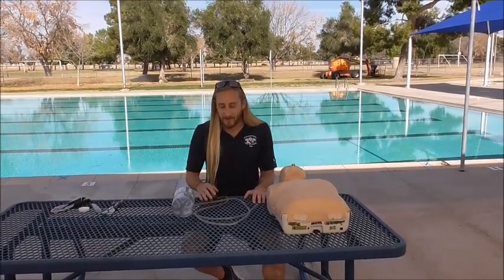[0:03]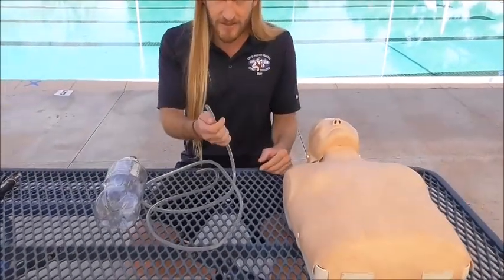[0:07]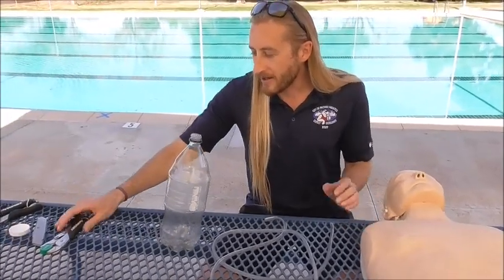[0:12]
Hi, this is how you make a foaming mannequin. So here's some of the equipment that you'll need. This is 1/4 inch plastic tubing. There's a 2-liter bottle, a cap for the bottle.
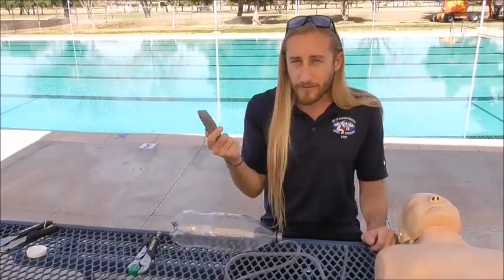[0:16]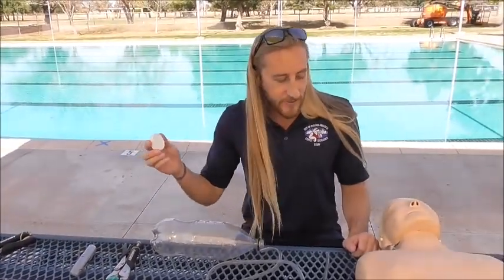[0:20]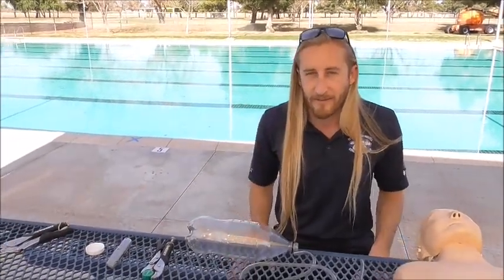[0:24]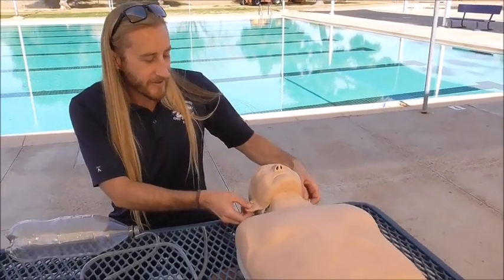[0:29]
I'm using a box cutter for cutting. You can also use a drill if you have one. This is another cap that we use to seal the back of the mouth, and then more pliers if I need them. So here's our mannequin. This is the one that we use at the City of Phoenix.
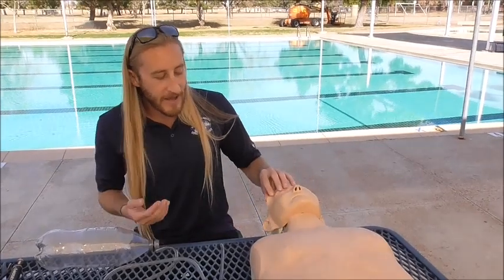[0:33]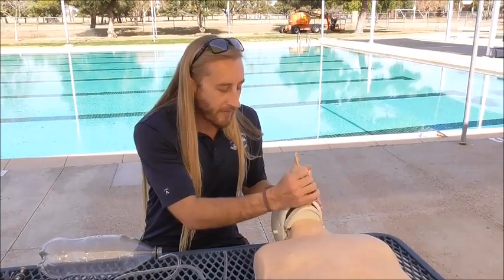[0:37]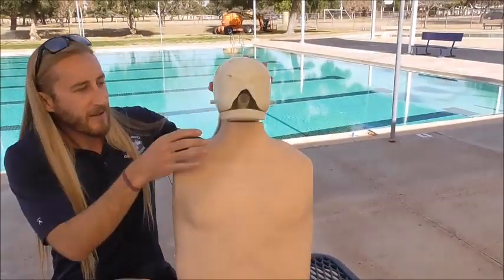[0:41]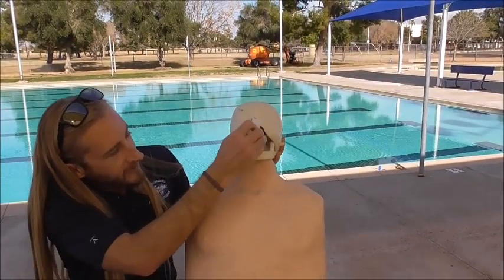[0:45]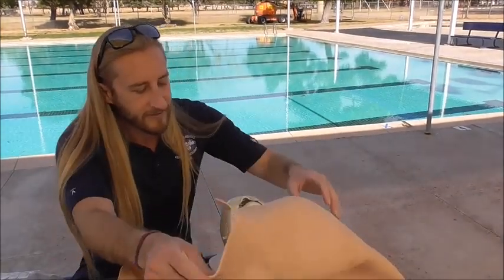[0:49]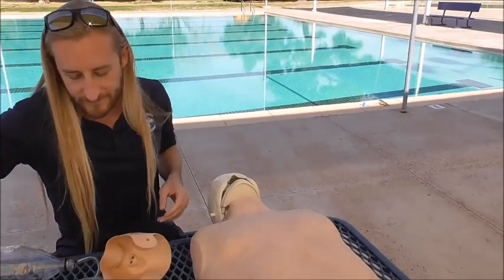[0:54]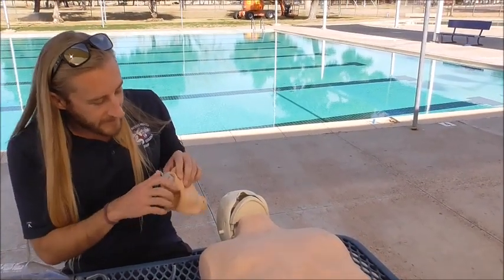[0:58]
How you make it kind of depends on what mannequin that you have. So first I'm going to take off his face, and then he still has the lungs attached. So all I have to do is take that off, and then I'm going to pull out the lungs.
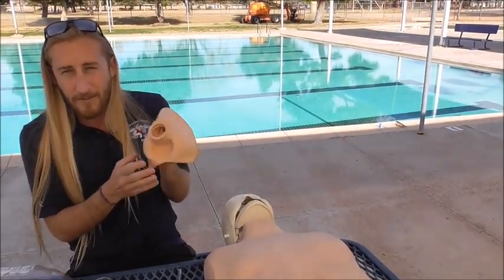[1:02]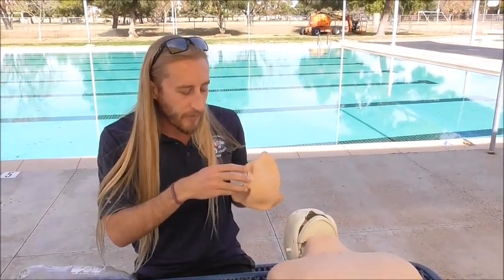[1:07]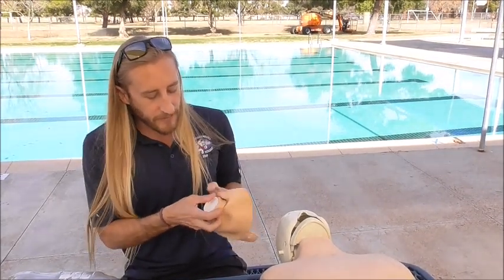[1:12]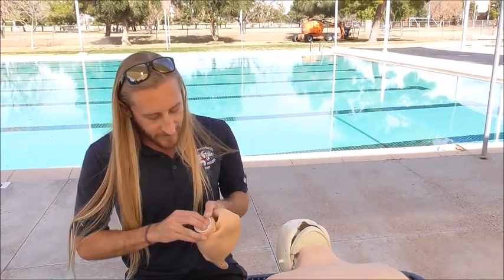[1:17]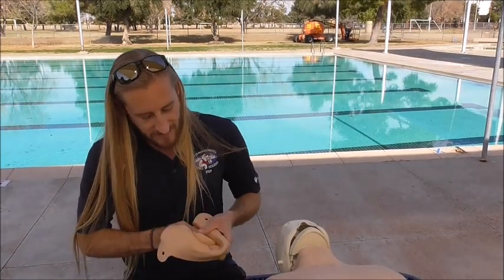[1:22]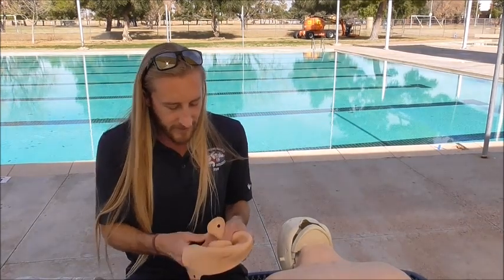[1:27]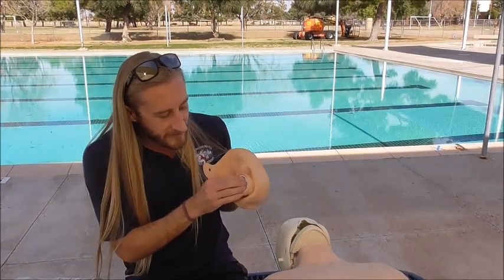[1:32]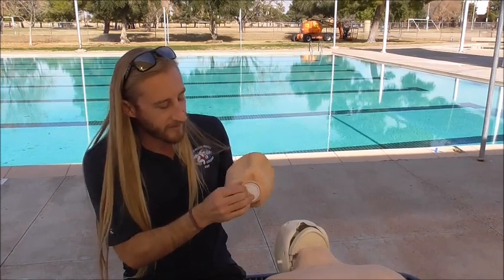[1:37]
The back of the mouth has this plastic piece that you can pull out, and all I really need to do to plug this up, and it might be different for you, is this cap right here fits perfectly in the back. It fits pretty snugly. So if you don't want to permanently convert your mannequin to a foaming one, if you can find a way to plug it up, then you can switch it back from a regular mannequin with lungs to a foaming one. And this fits pretty tightly in the back, but if I wanted to make sure it was permanently sealed, I can also put glue around the edge and it'll stay in there.
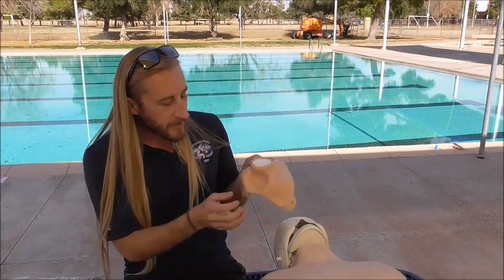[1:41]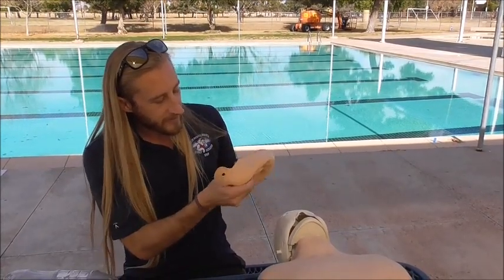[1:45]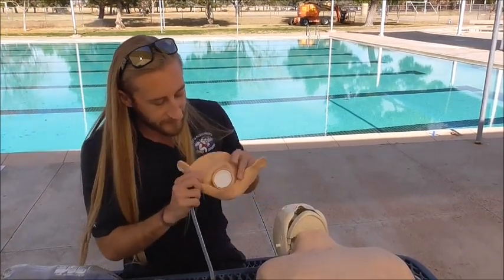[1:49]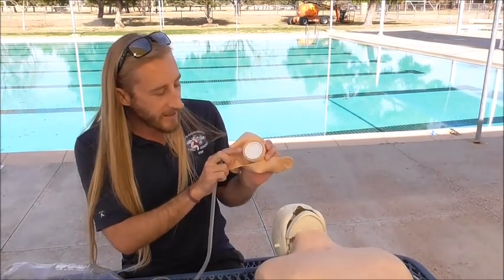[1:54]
Another option is to cut open a hole in the side of his mouth that will lead the tube inside. But if you have the ability to plug it up, you can just cut a hole in the cap and then seal it up with some hot glue.
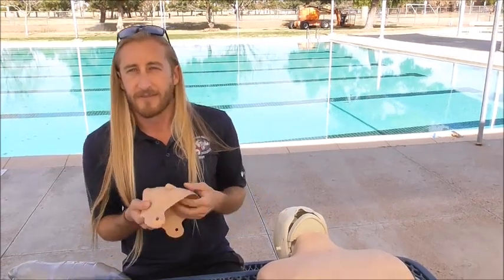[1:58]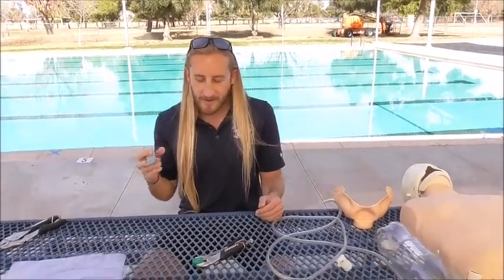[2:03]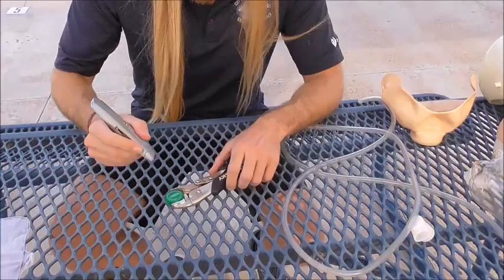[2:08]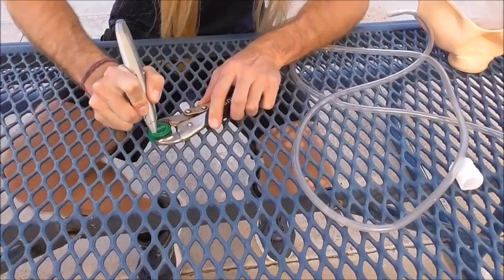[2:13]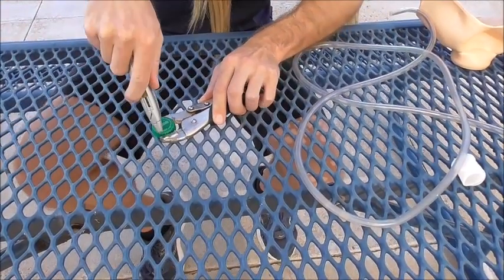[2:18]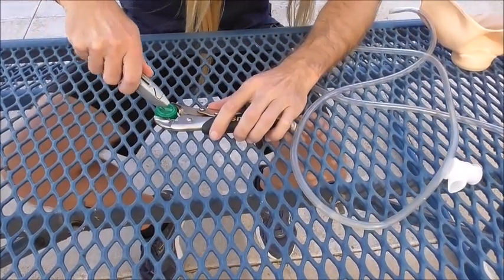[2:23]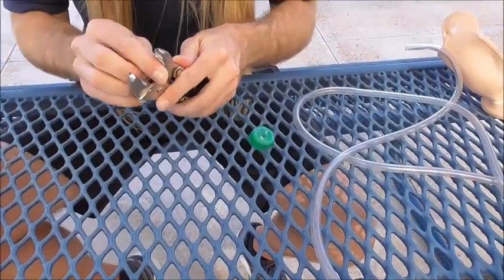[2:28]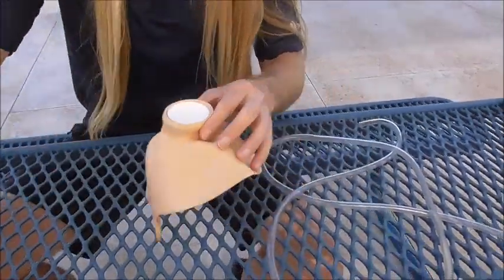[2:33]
I'm going to use a box cutter to cut a hole in my cap. If you have a drill, it would probably be easier, but box cutters are pretty cheap and you can get them at any hardware store. All you have to do is just push in just a little bit. The hole doesn't need to be that big. Okay, and then I'm going to do the same to the cap in here.
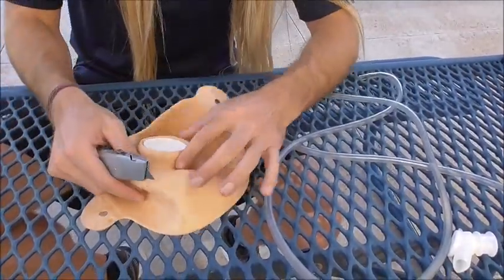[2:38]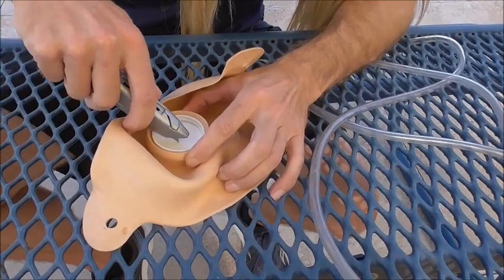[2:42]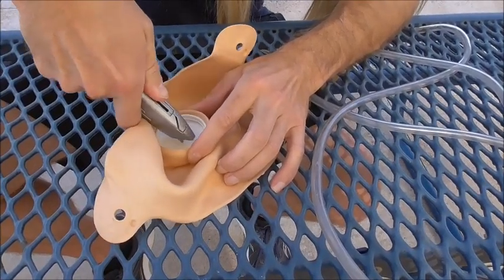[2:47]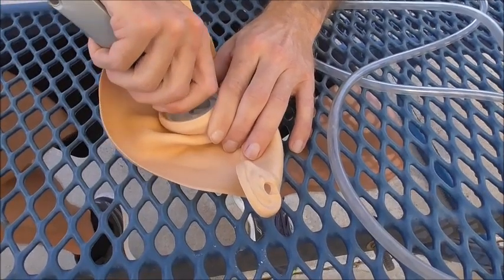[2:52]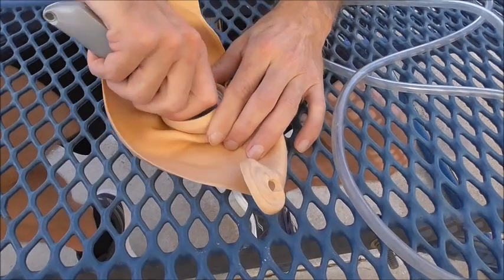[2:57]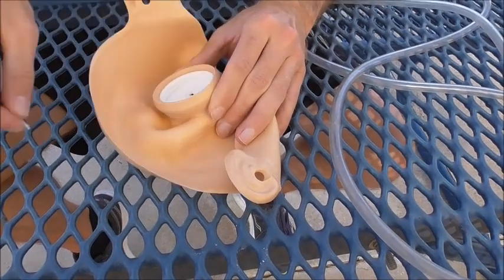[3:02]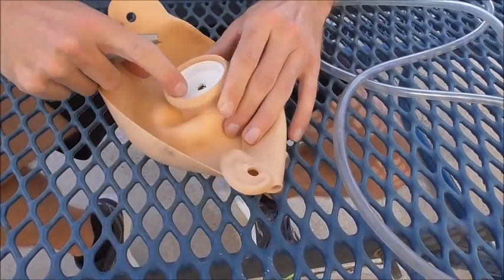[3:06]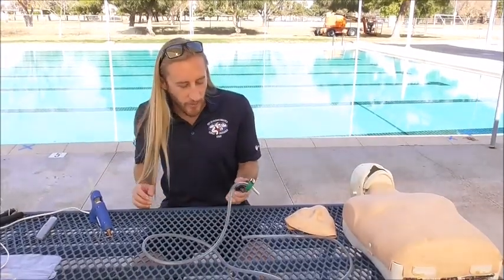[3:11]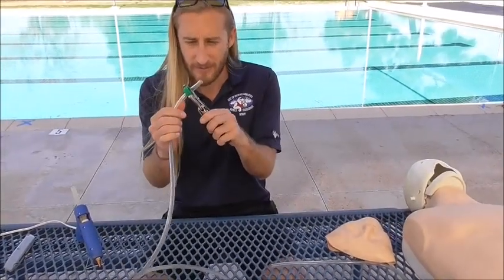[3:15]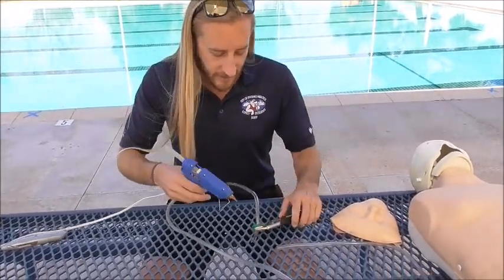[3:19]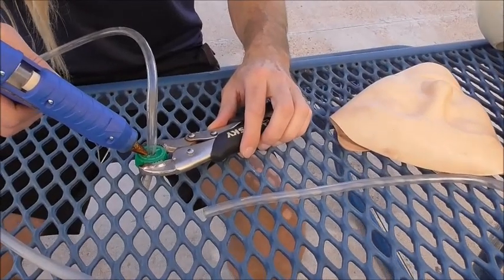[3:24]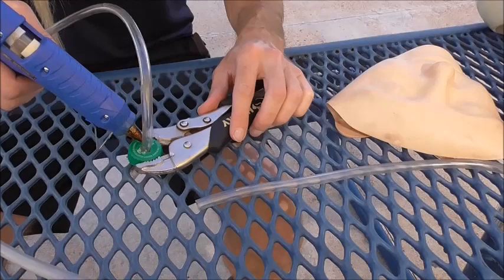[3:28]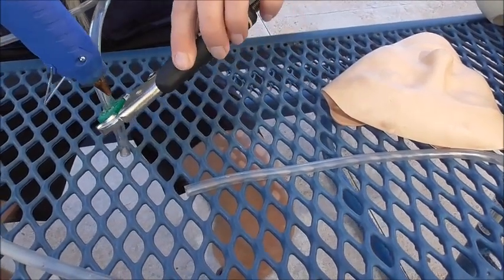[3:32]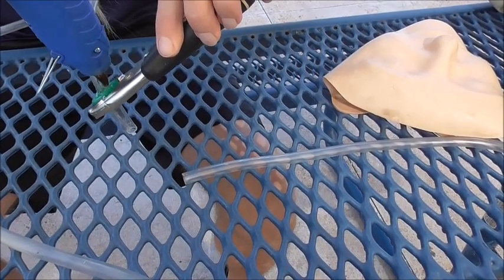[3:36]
Once you cut open your caps, all you have to do is put your tube through just like an inch or so, about that much. And then I like to use a hot glue gun to make sure it's sealed up. I think that hot glue is just a little bit more flexible. And if you use super glue, it's kind of a little bit more runny and it doesn't make a thicker seal, so it could crack and break.
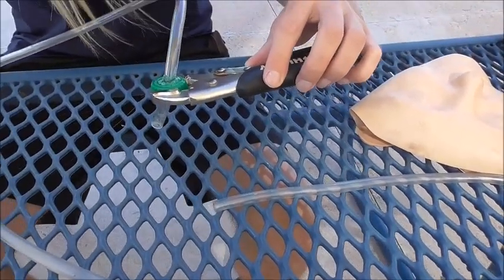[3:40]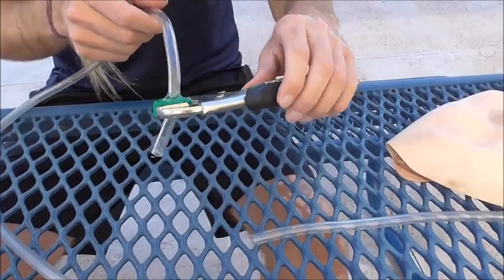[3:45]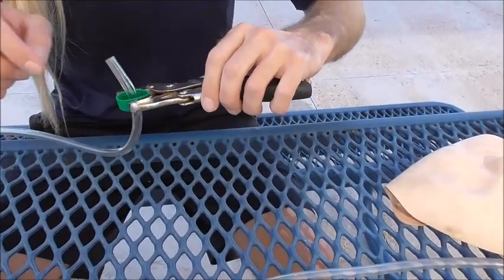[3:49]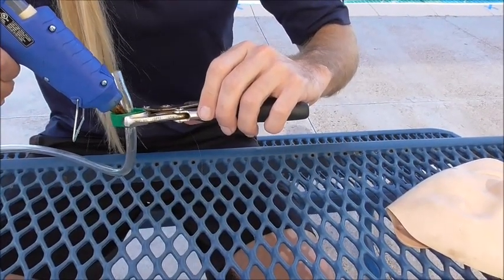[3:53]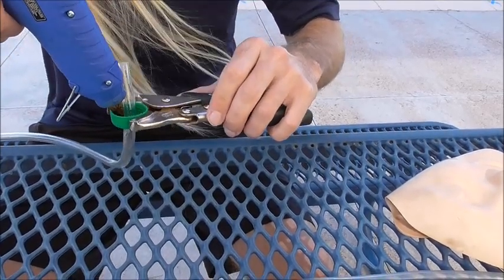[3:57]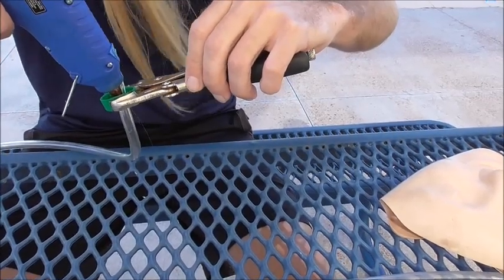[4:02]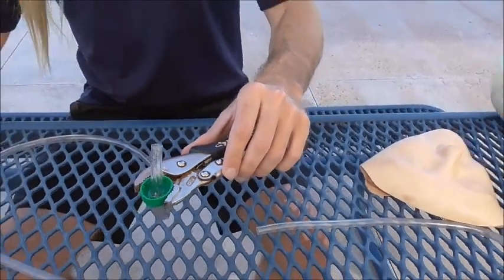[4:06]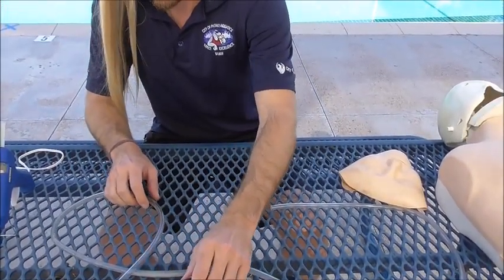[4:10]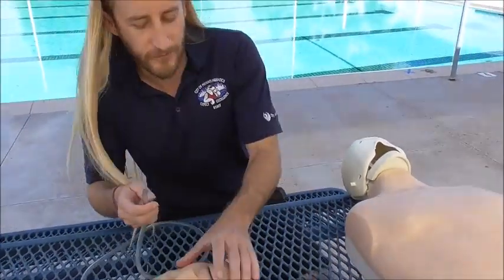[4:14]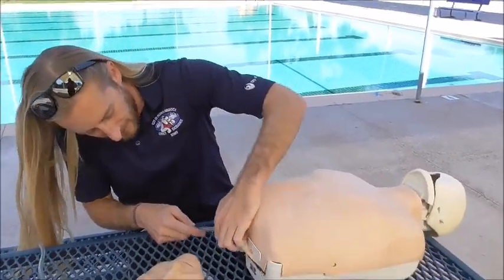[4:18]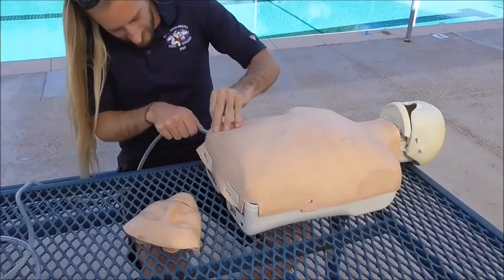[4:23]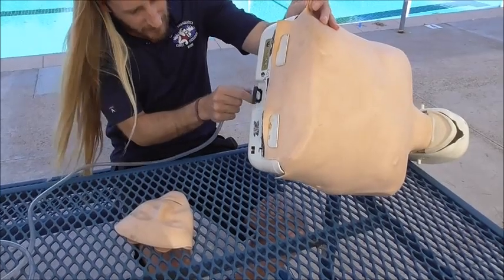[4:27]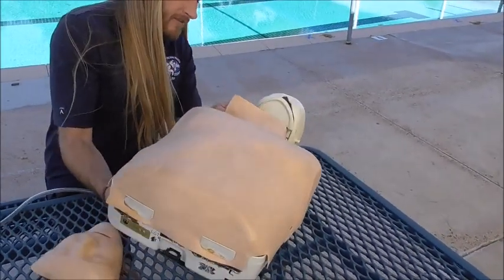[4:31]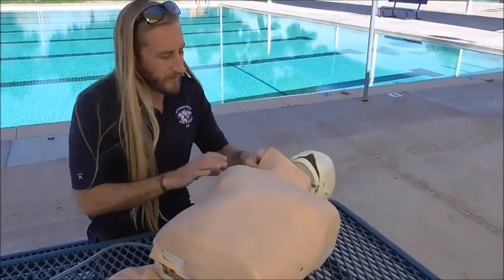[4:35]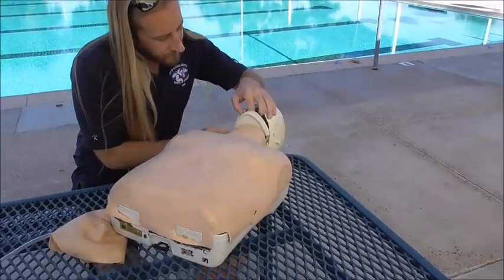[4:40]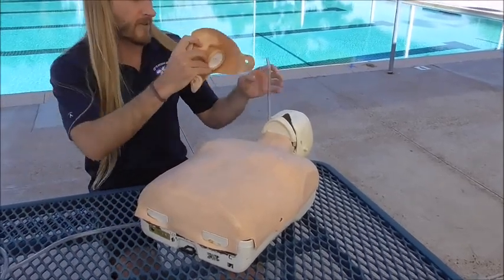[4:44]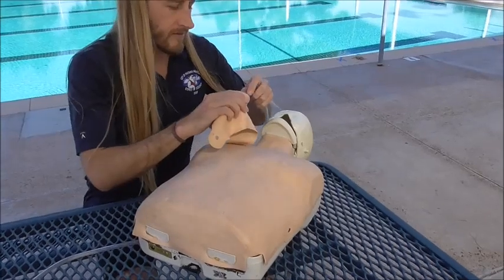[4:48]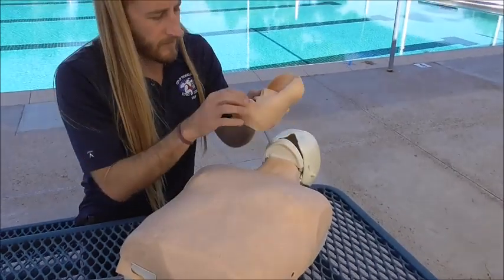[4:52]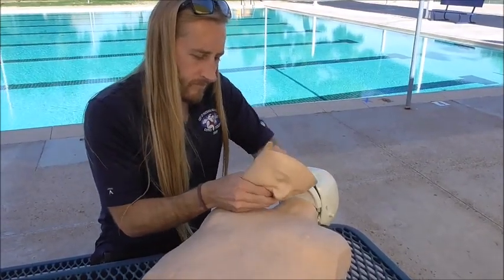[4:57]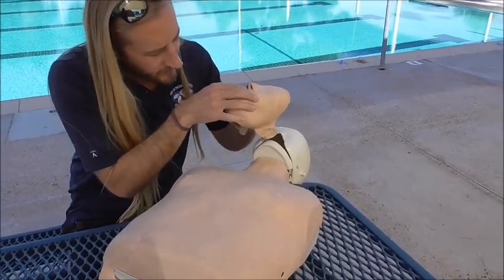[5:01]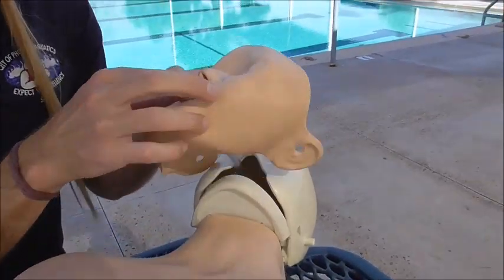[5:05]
Okay, and then before you attach the hose to the face, make sure that you're actually running the hose through your mannequin first. So I'm going to go through the back. You don't need a whole lot of hose coming out of here unless you want the hose to actually pop out of the mouth. Just a little bit.
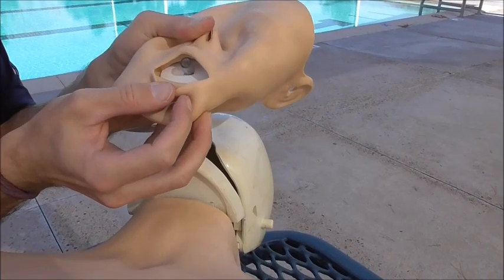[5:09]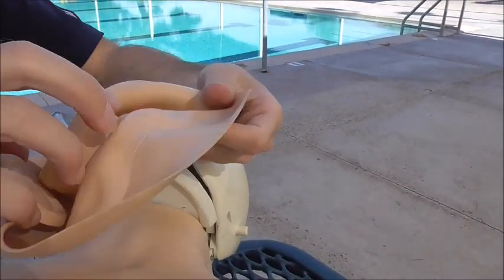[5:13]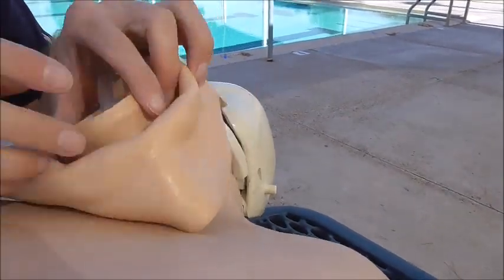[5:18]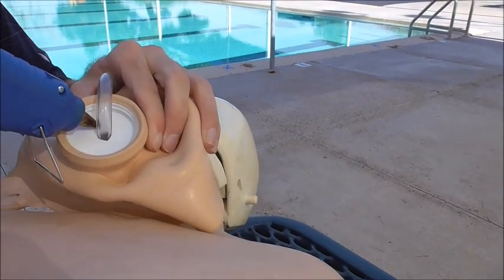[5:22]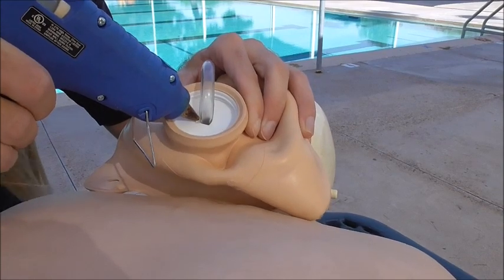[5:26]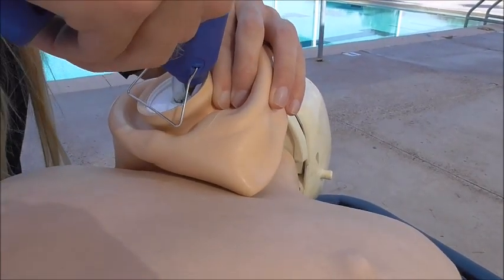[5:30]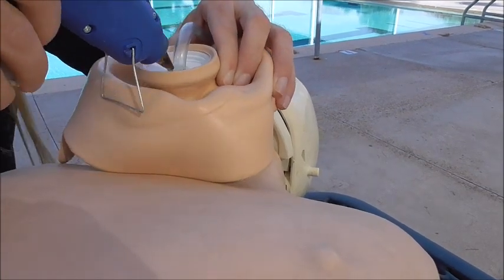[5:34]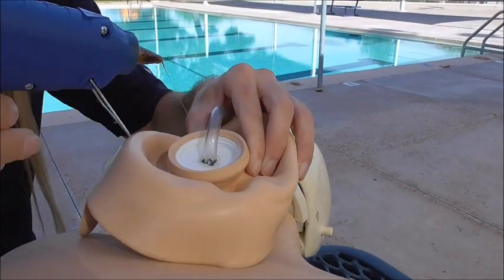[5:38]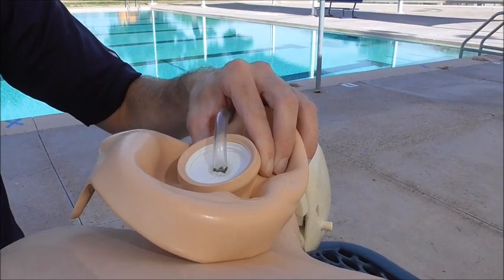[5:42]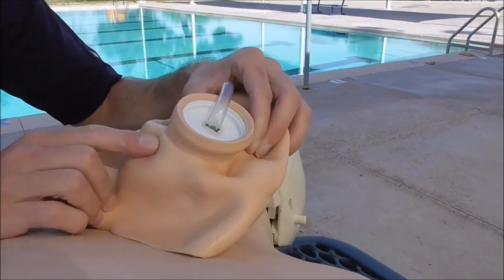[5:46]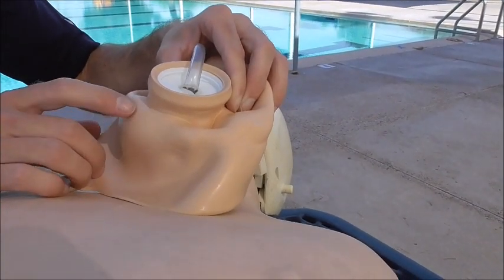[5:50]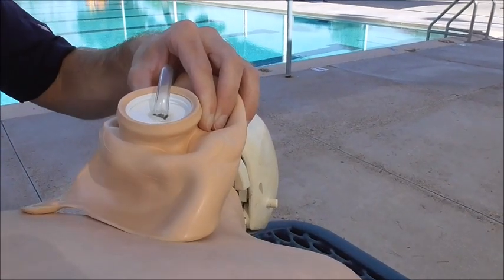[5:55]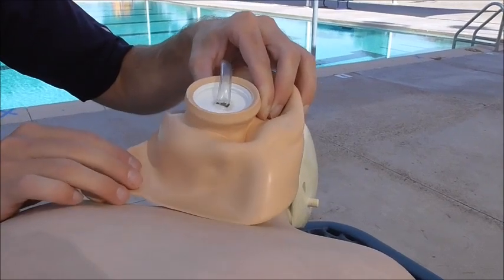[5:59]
I'm just going to add a little bit of hot glue to the other side of the cap. If you don't really seal it up that well, then you're just going to get a bunch of foam going through the back of the head instead of out of the mouth and the nose. Okay, and if you cut a hole in the side of the head for the hose to run through, make sure you seal that up too. But I like to use a cap or some other kind of thing to block up the back of the throat instead of cutting into the rubber.
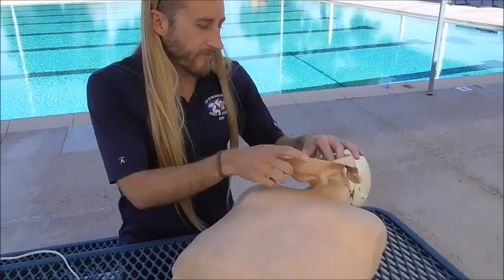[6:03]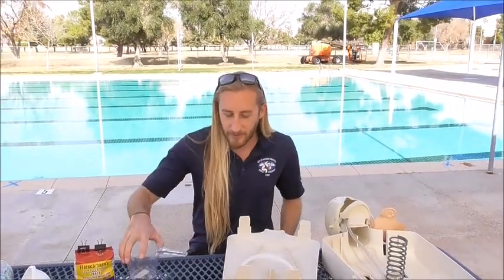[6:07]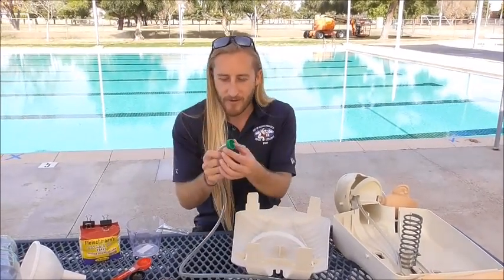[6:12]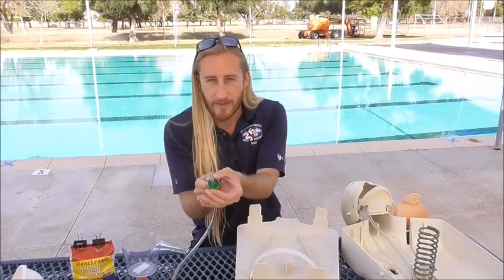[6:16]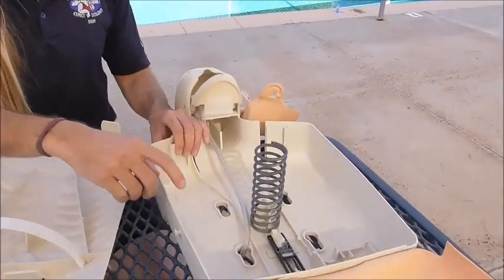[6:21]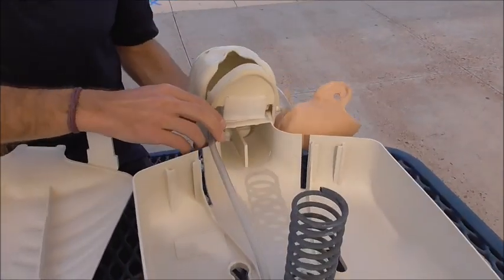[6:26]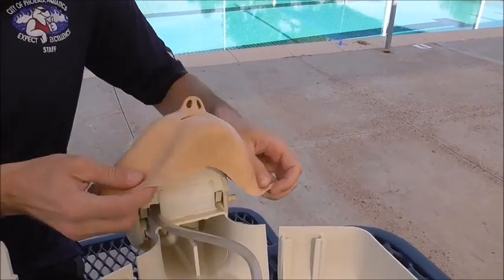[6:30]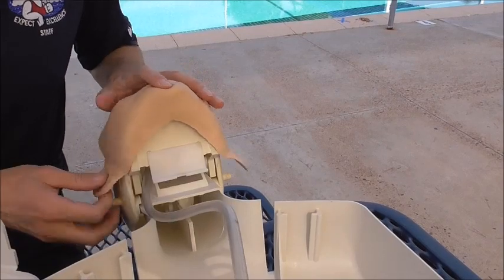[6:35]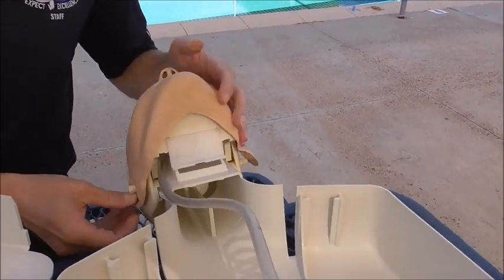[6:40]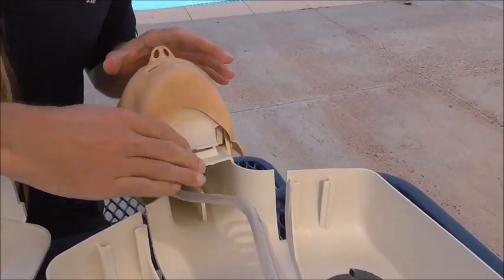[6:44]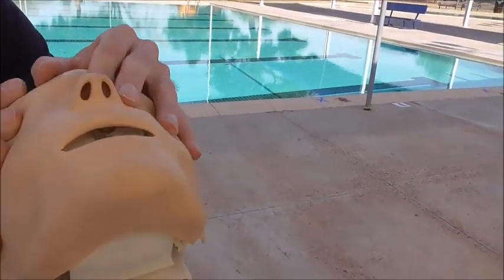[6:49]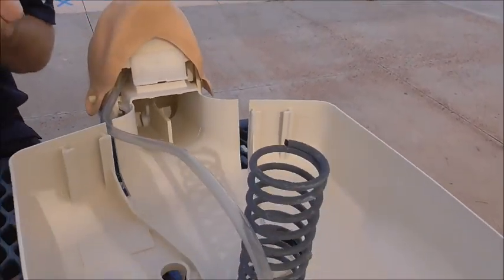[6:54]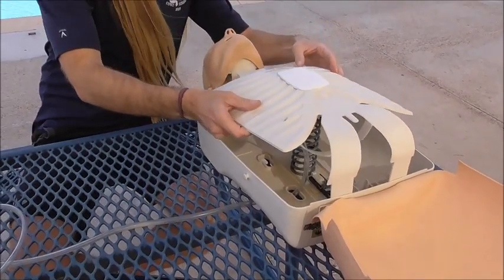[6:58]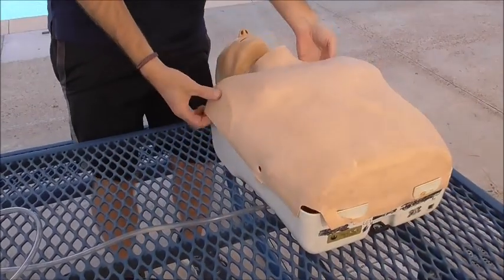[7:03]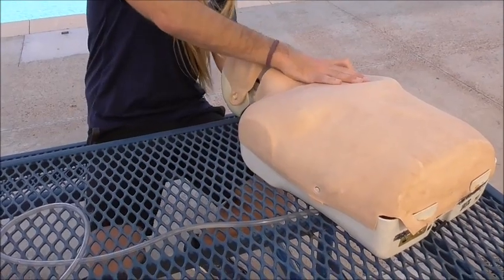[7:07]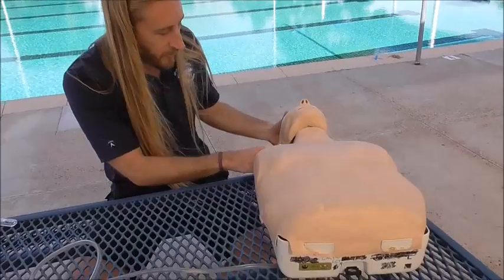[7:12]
Here's our mannequin fully constructed. I have the tube and the cap with hot glue on the top and the bottom so that the foam can't escape through where they come together. Then I'm running the tube up through a hole in the back of the mannequin and then through the side of the jaw. Okay, and then you can put the face back on. And you can see inside the mouth. Even with the modifications that we made, it still looks like a normal mannequin except with this tube running out of it.
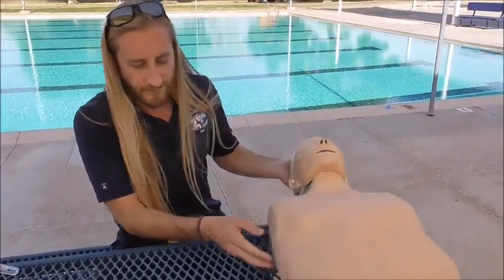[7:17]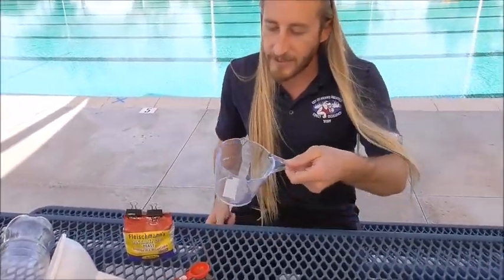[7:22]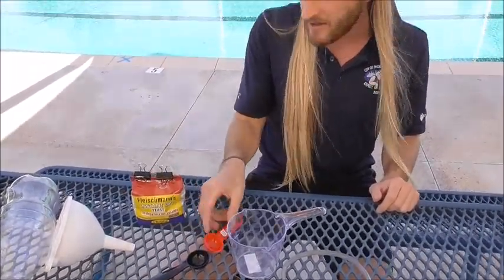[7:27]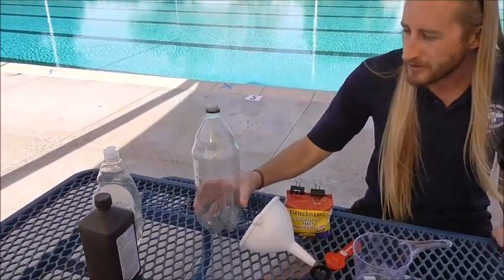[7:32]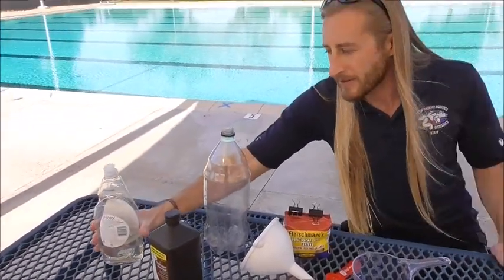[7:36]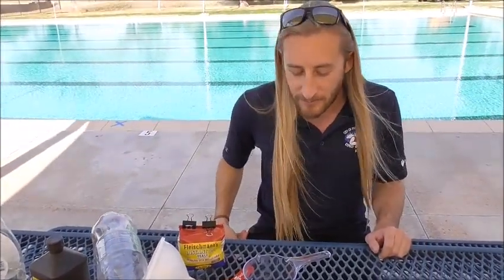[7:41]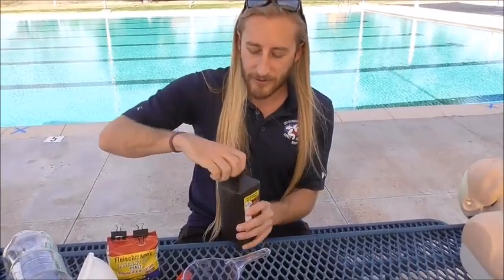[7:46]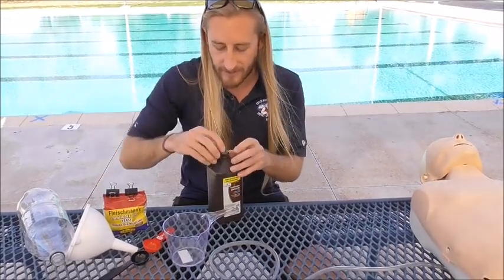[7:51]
Okay, here are the ingredients that you need to actually make the foam. You need a measuring cup. I use 2 tablespoon measurings. Here's the yeast, a funnel, your 2-liter bottle, some hydrogen peroxide, and clear dish soap. If you use colored, then your foam will look whatever color that the dish soap is. Okay, so first I'm going to measure out 8 ounces of hydrogen peroxide.
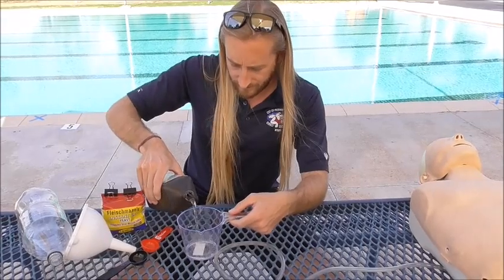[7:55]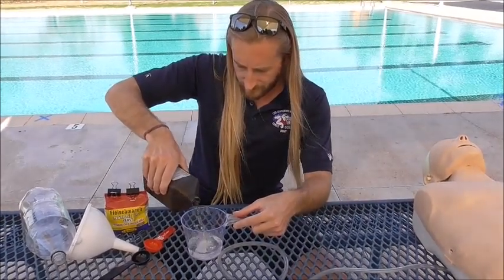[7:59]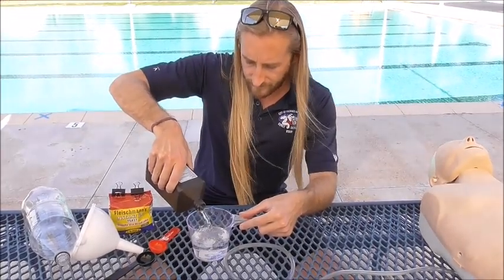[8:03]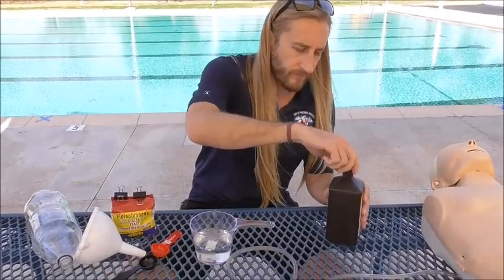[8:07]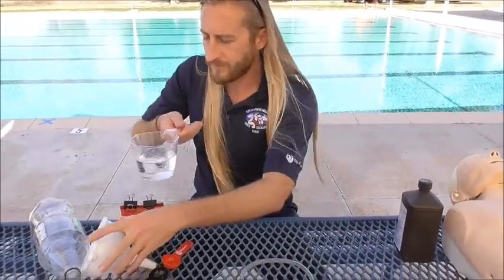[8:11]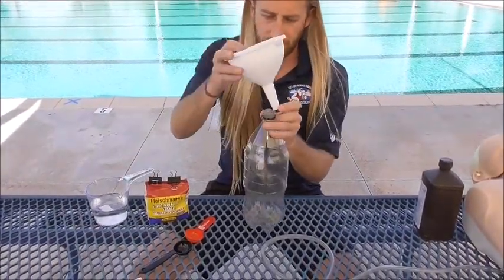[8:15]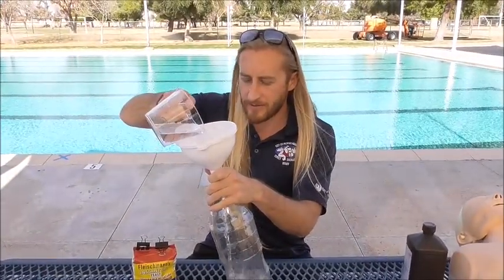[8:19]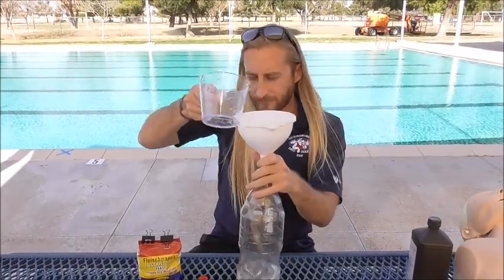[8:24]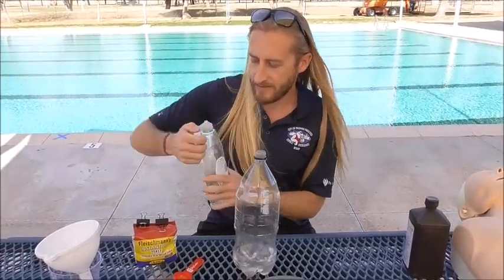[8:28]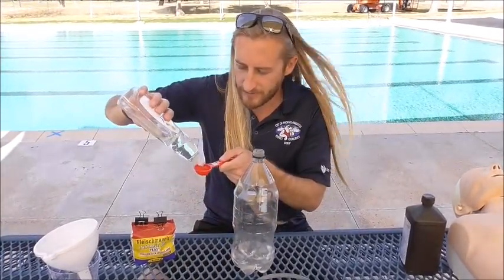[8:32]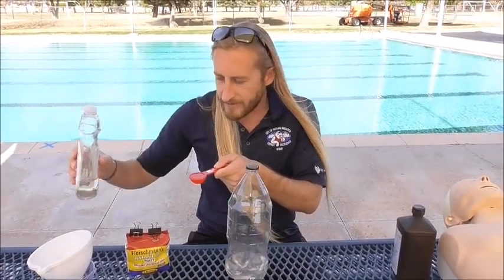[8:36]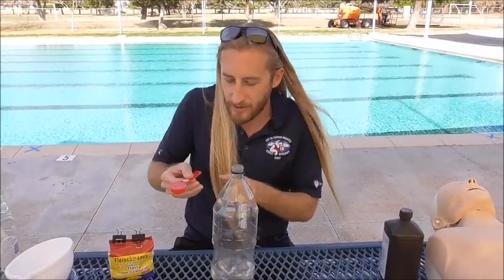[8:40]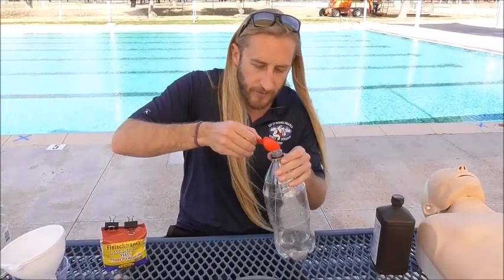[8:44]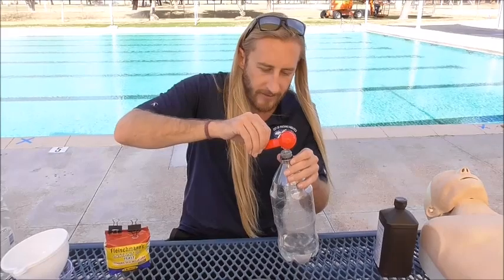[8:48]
Directly into the bottle. And then you need 1 tablespoon of dish soap. And I don't like to use the funnel to put the dish soap in because then it makes it harder for the yeast to flow through the funnel. Just pour that right in.
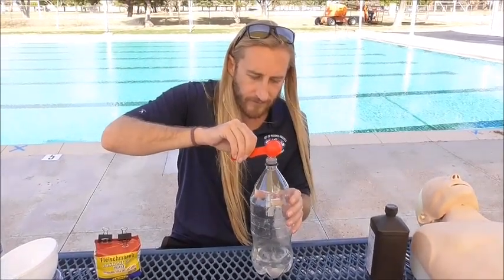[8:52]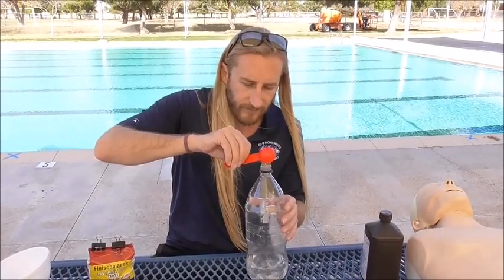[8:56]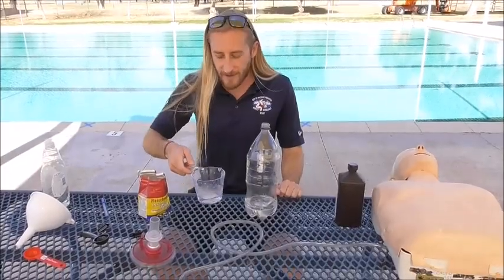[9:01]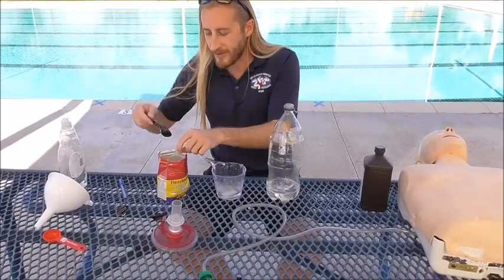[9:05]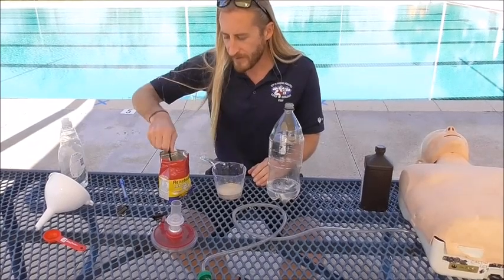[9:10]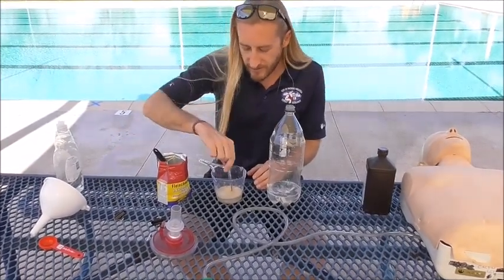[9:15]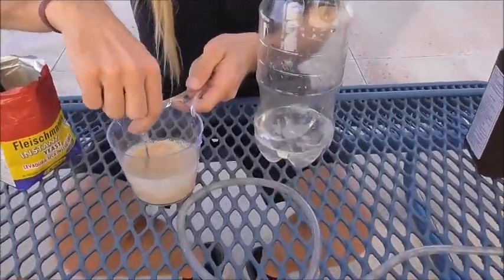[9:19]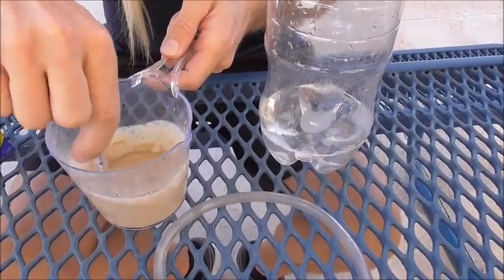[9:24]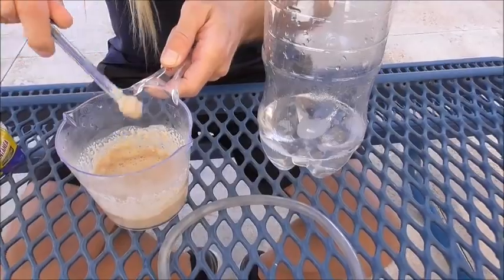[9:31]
At 2 ounces of warm water, I stuck it in the microwave for like 15 seconds. And then I'm going to do 2 tablespoons of yeast. And then I'm going to stir it until it's not very clumpy so that it actually goes through the funnel pretty quickly. Okay, and this is the part where you have to work fast.
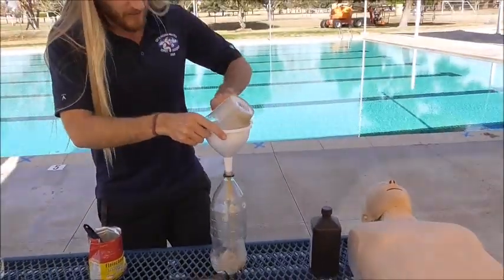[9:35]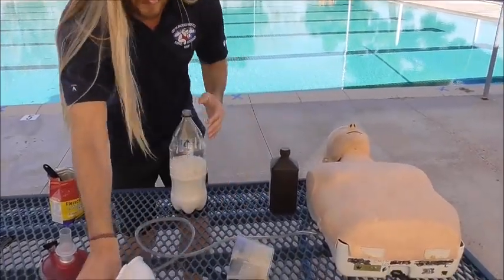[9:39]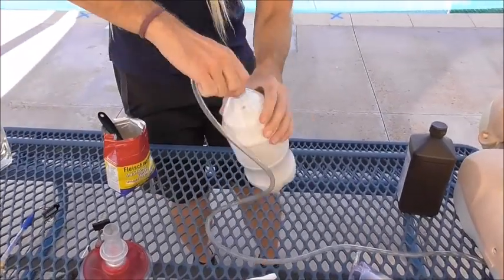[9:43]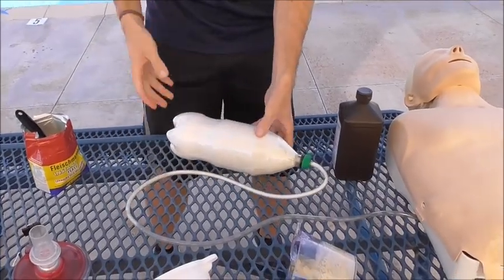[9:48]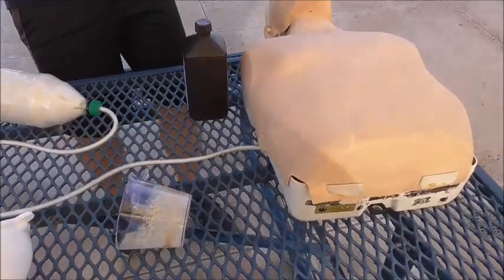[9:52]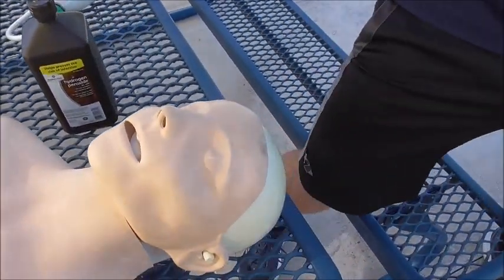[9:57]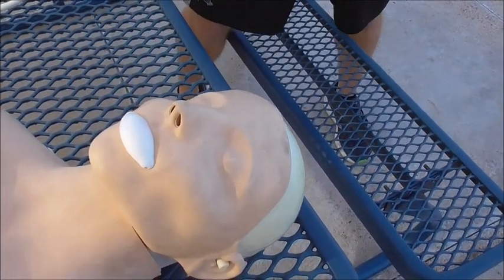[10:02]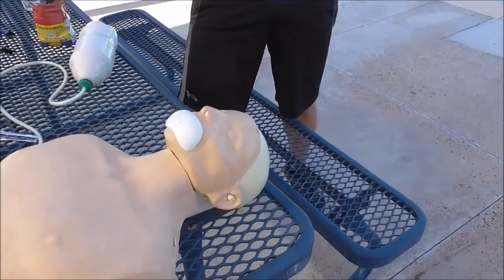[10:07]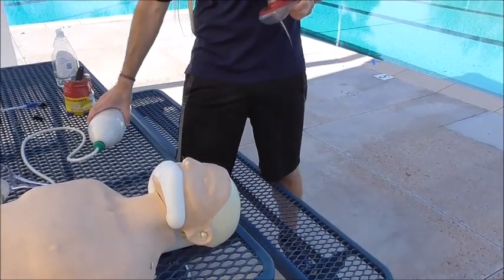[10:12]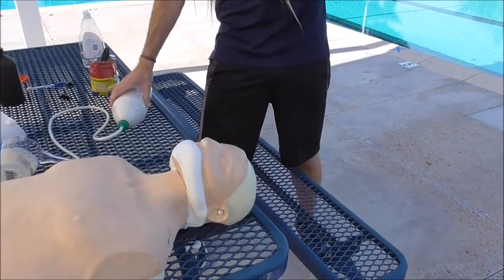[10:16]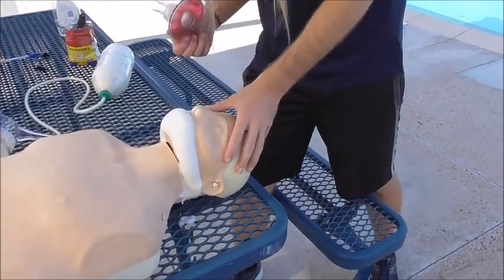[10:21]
Okay, so the foam is going through the tube, and we did a good job sealing it. It's not coming out. And then it's going to go through the back of his mouth and start foaming up. Okay, and the foam actually lasts for a good amount of time, so you can get a couple cycles of rescue breathing or CPR going. So I'm going to seal it, and you can see it's starting to come out the nose too.
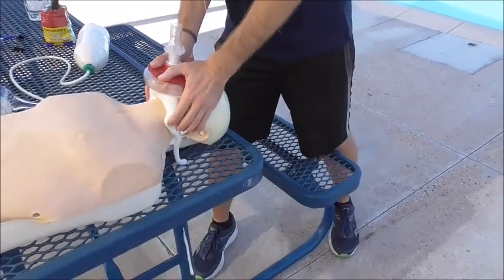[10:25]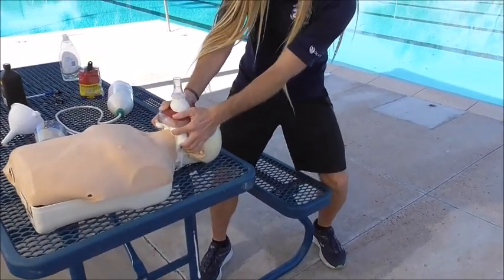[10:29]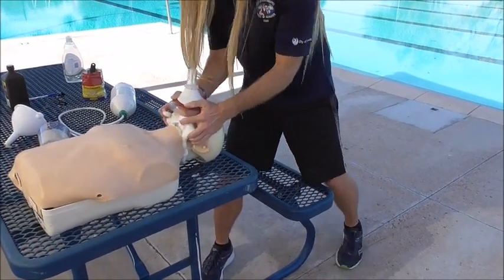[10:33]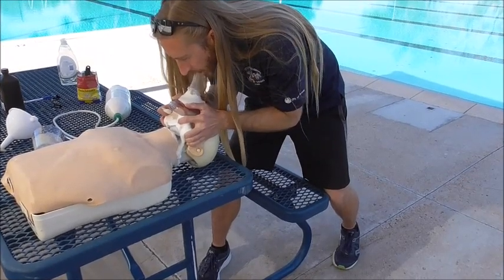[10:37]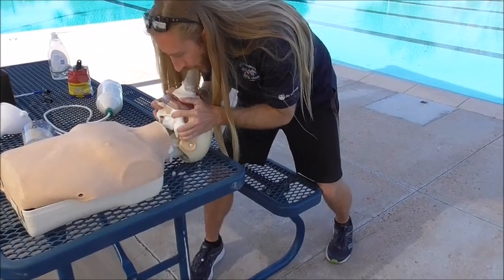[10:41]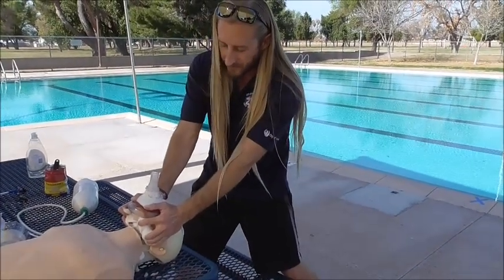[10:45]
Okay. And then foam, that's a lot of foam, but it's not coming out through the top of the mask. You can still breathe through the foam.